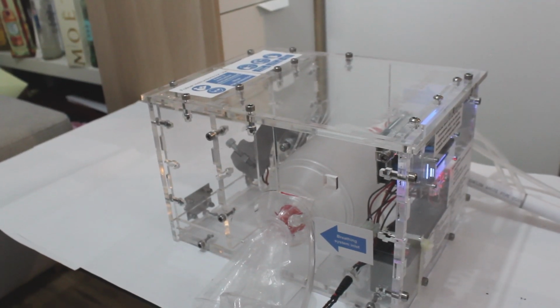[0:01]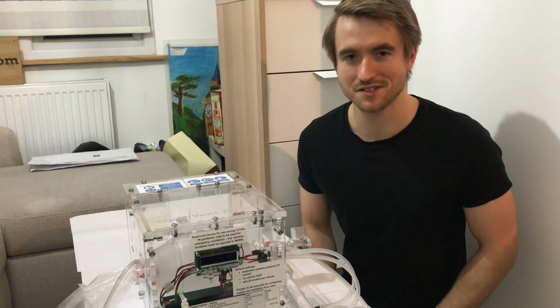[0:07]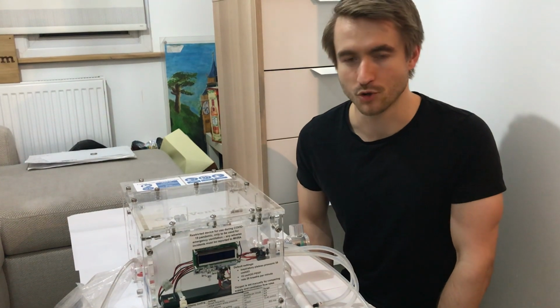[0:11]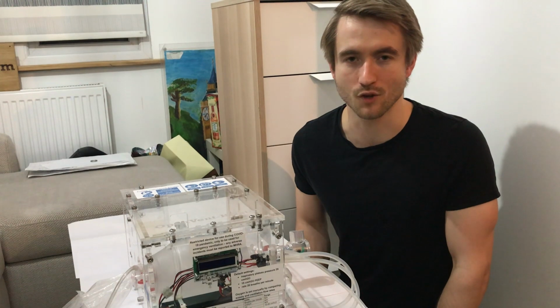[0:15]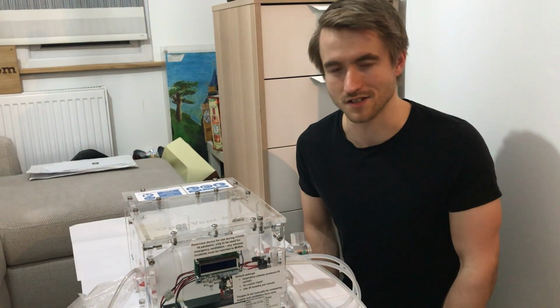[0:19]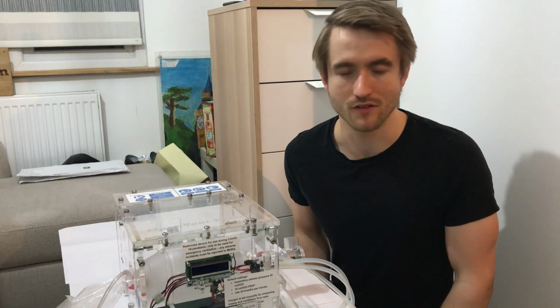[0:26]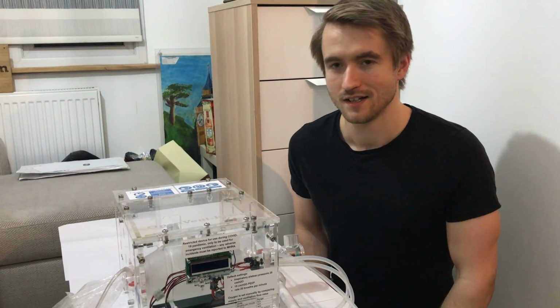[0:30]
Hi everyone, this is our design for an open source ventilator for treating COVID-19. We're a group called OpenVent Bristol, comprising a small number of engineers working voluntarily on a not-for-profit basis to create this design of ventilator, with the aim of open sourcing our design so that the rest of the world, or whoever's interested, can benefit from the learnings that we've made along the way.
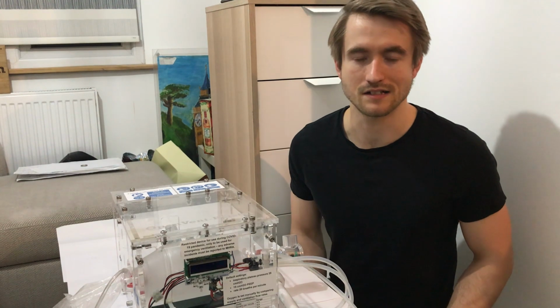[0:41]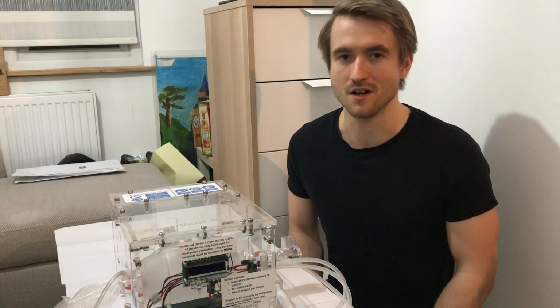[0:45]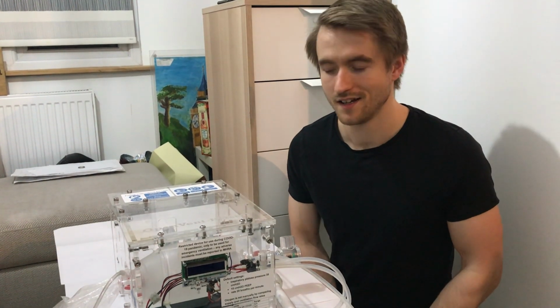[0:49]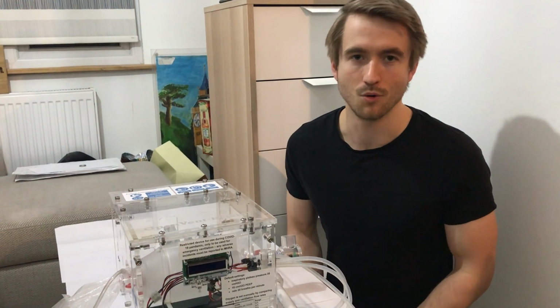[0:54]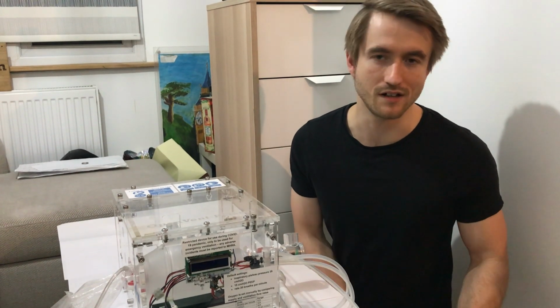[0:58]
The aims of our project are to create a design which is super simple, as simple as possible, so that it can be designed, manufactured, and eventually hopefully certified as well within a very short space of time. So keeping the design as simple as possible is absolutely key, and using parts that are readily available and manufacturing processes that are readily available not only in this country but in pretty much any country in the world.
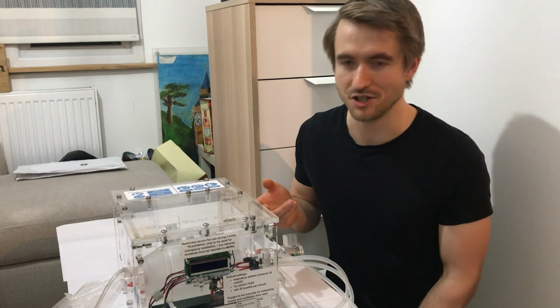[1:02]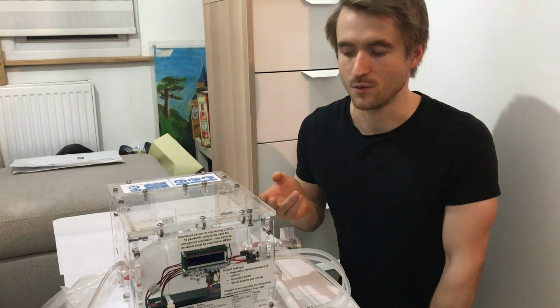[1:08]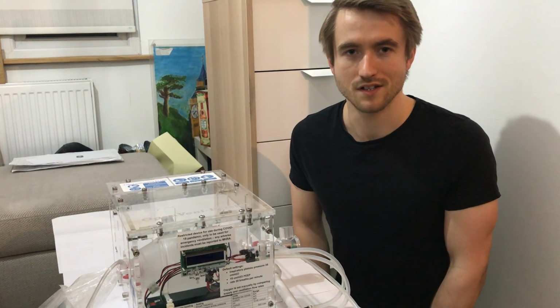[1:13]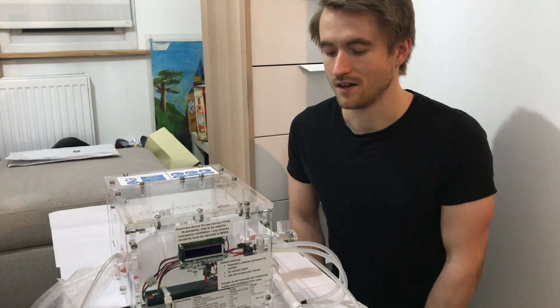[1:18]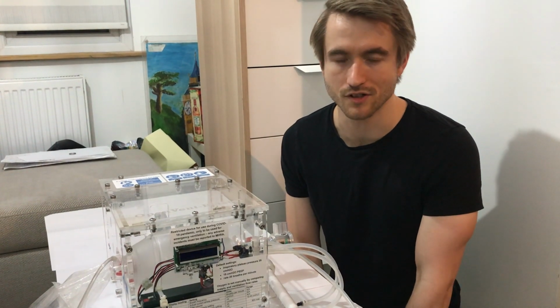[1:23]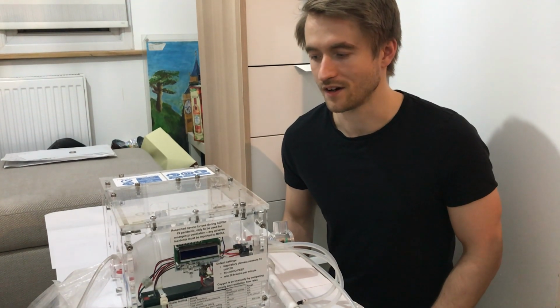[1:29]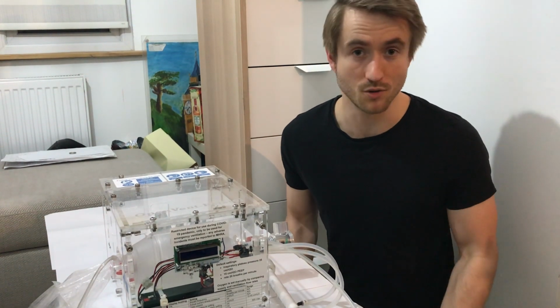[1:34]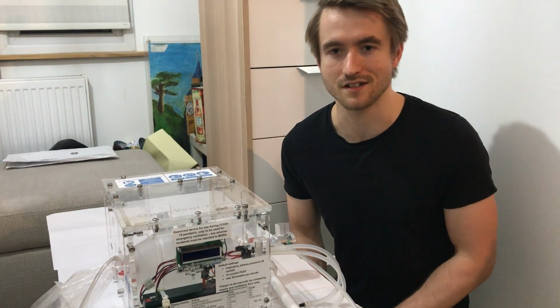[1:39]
Because although we're based in the UK, this isn't necessarily designed with that market in mind. We're considering markets that may not be able to afford the bigger sophisticated ventilators that cost tens of thousands, but it could potentially be used by any country that's interested. For example, there's a group in America called Helpful Engineering who are working to develop the design that I posted last time, and we're collaborating together, which is really awesome. Those guys are great, and they're aiming towards getting FDA approval for use of the device in America.
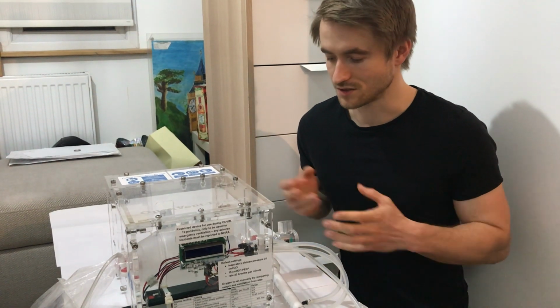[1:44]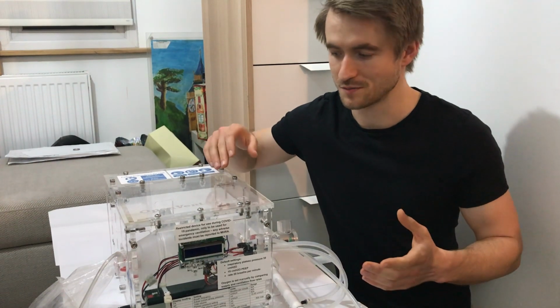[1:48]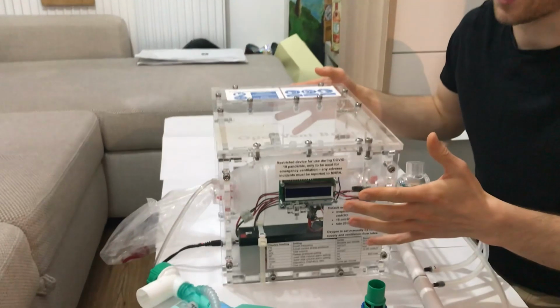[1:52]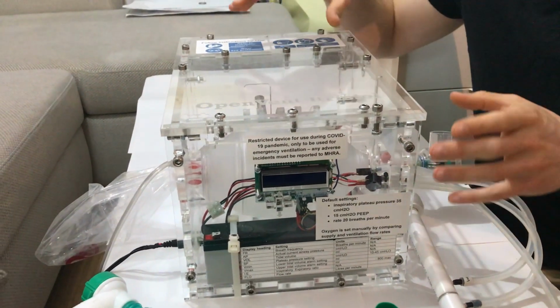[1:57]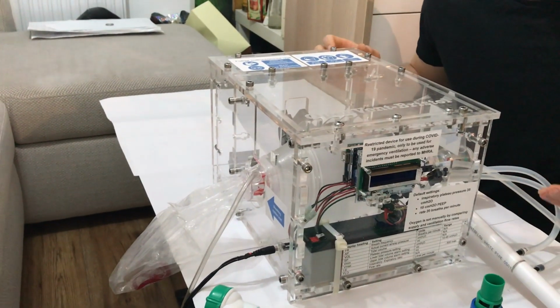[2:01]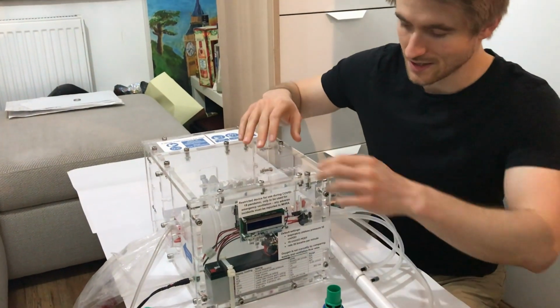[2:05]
What I want to do is talk through the device and how it might be used from the user's perspective. First of all, the device is housed in a box, in an enclosure. And every design decision we've made on this is based around the requirements that the MHRA have posted, so all of the moving parts have to be fully enclosed.
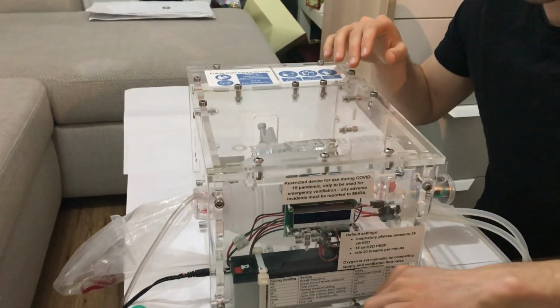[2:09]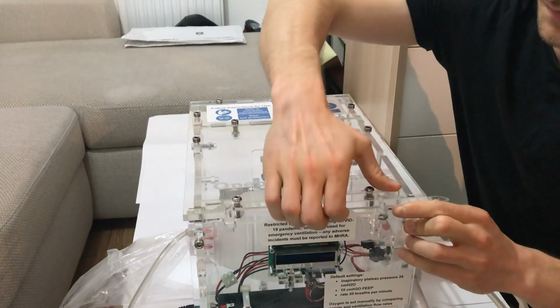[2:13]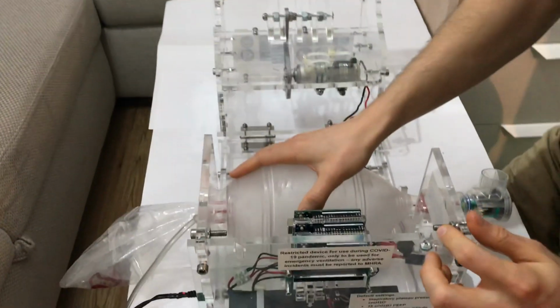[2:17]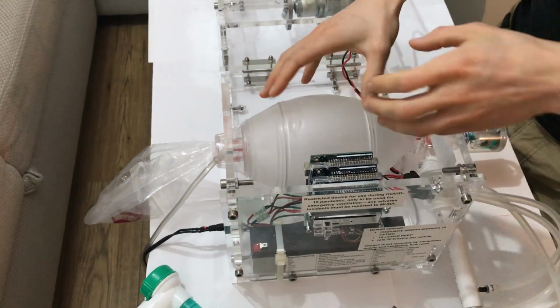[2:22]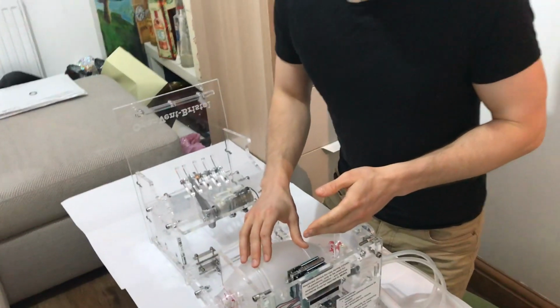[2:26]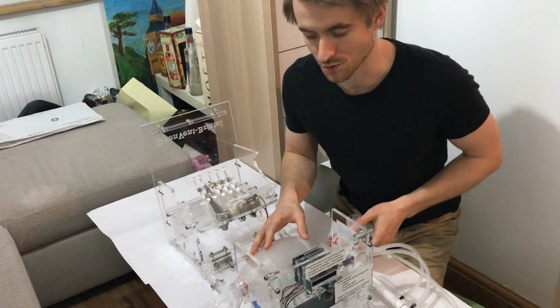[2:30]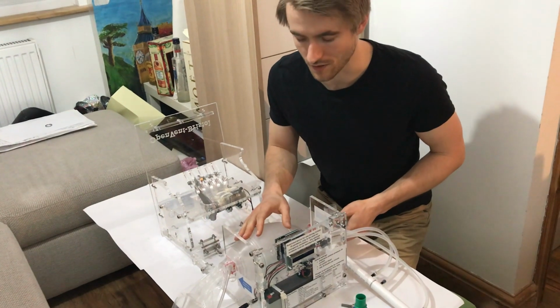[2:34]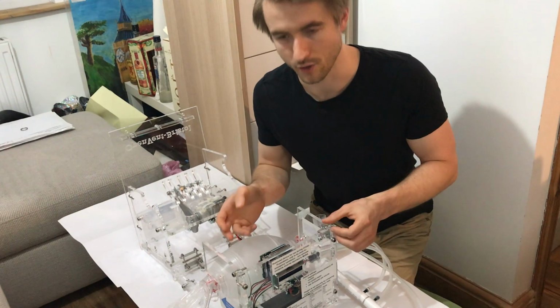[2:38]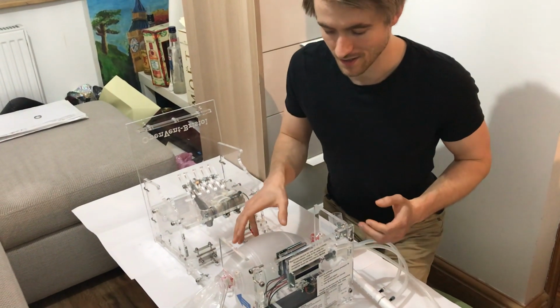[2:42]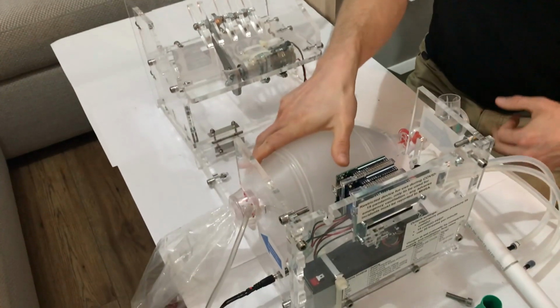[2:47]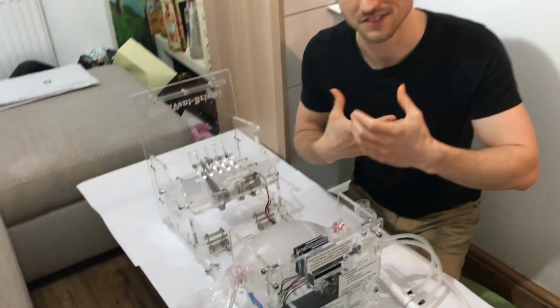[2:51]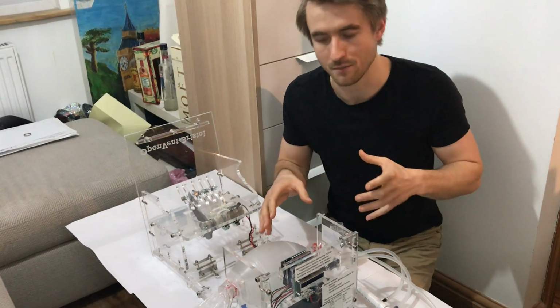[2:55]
We've taken the approach of basing the design on a BVM, also called an ambu bag, and one of those is this device here. This is a BVM. The advantages of basing the device on the BVM are that it's already a medically certified product, which is widely used across the world in a lot of healthcare systems already. It's really cheap, really readily available, and already medically certified. The bit that it can't do is automatically ventilate. It's designed as a hand pump ventilator, so you squeeze it, and traditionally you would put a mask on the end, put that mask on somebody as a paramedic or somebody in the hospital and squeeze it as a temporary measure.
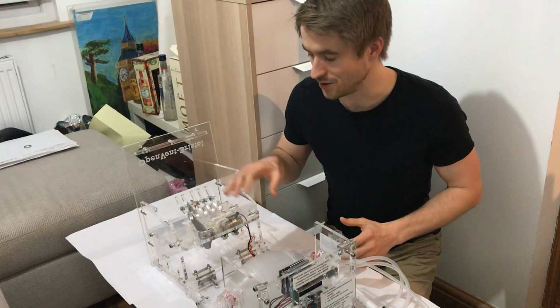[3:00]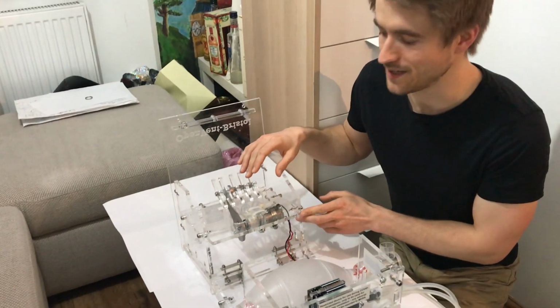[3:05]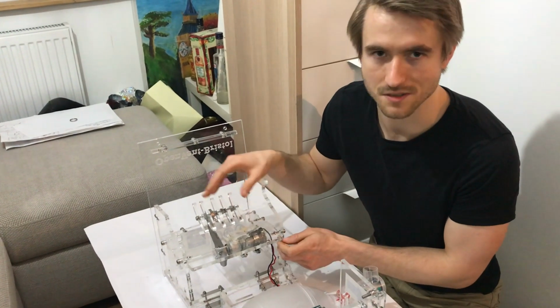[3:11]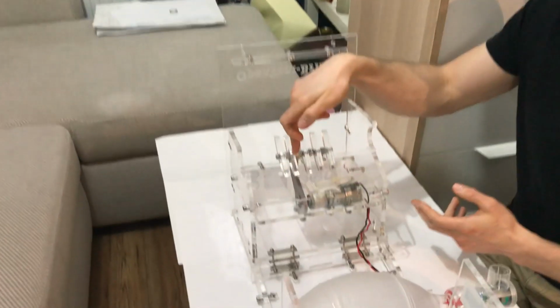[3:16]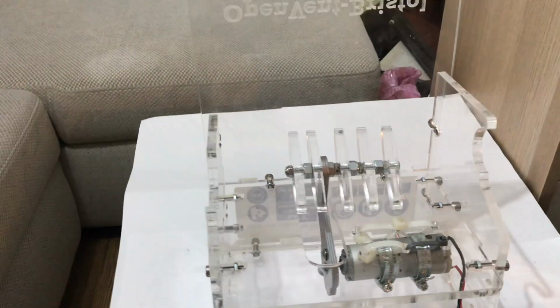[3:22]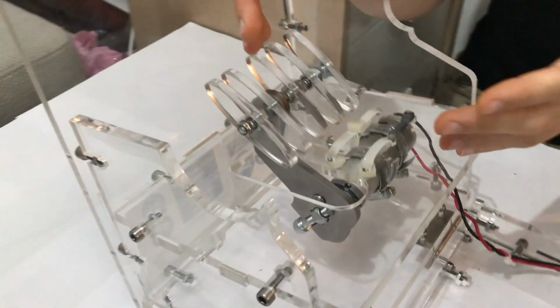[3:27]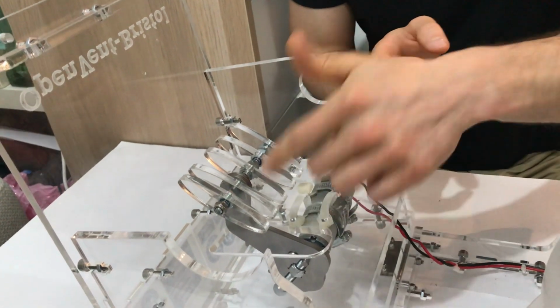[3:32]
What we're doing here is animating that bag and actuating it using an electromechanical mechanism, but still with that focus of trying to keep it as simple as possible. There's nothing fancy on here, there's no parts which don't need to be there, it's just cut down to the absolute bare bones. So we've got a motor and then an arm attached to the motor, and that arm just moves backwards and forwards, controlled by some fairly simple software. My point is there's no gears, rack and pinions, there's nothing between the motor and the arm. It's just keeping it as simple as possible.
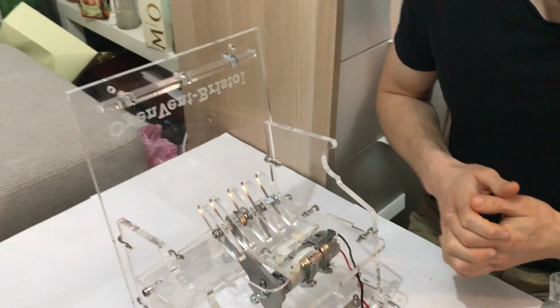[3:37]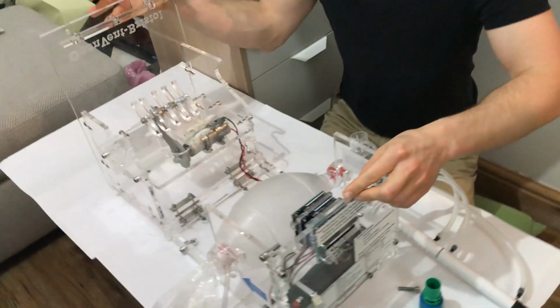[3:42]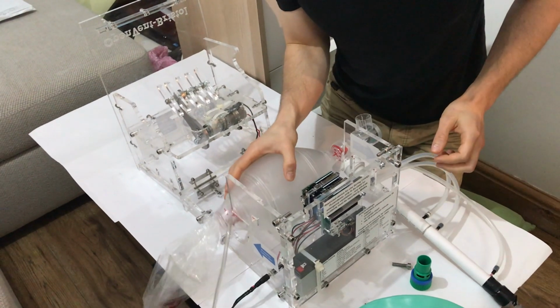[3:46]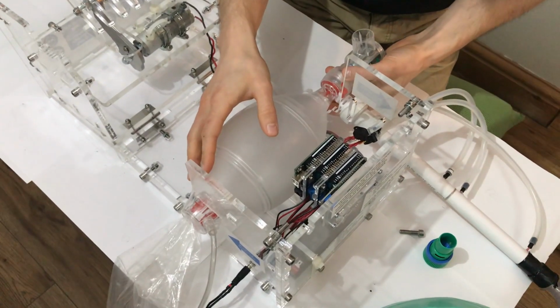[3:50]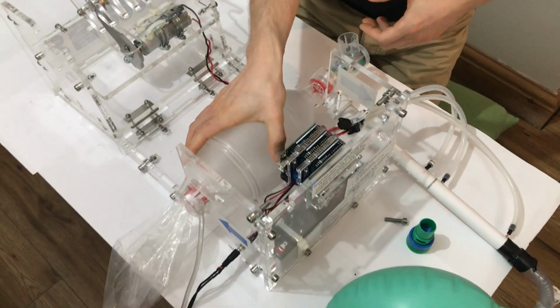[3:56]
As you notice, the whole thing opens up, the lid comes back, for a couple of reasons. One, so that you can swap out the ambu bag and put a new one in, but also if you really get desperate and really need to, you can just open it up and grab it by hand and squeeze it yourself as a manual backup.
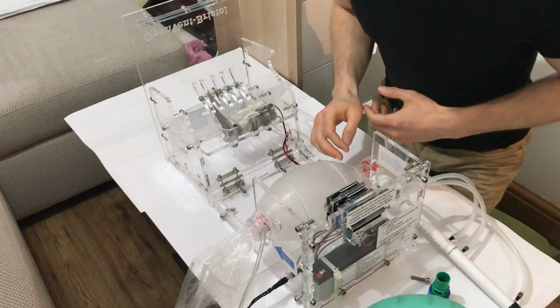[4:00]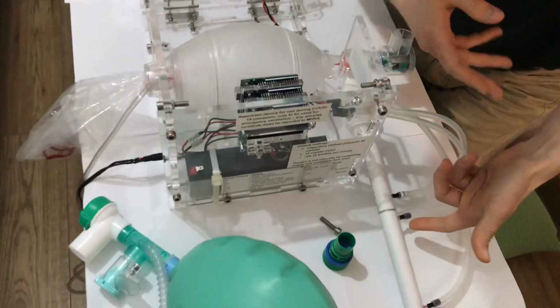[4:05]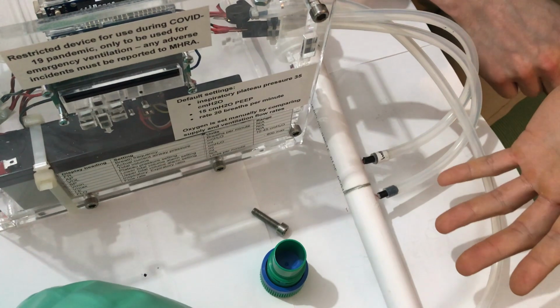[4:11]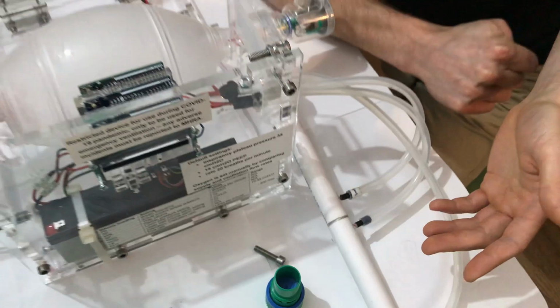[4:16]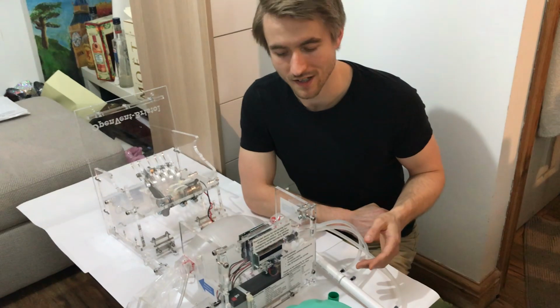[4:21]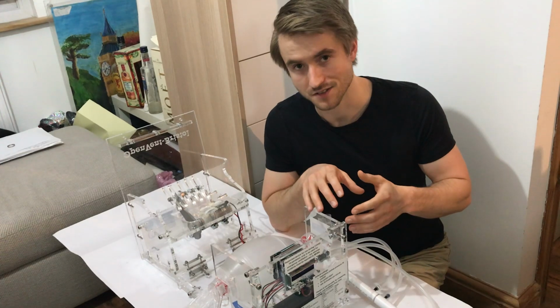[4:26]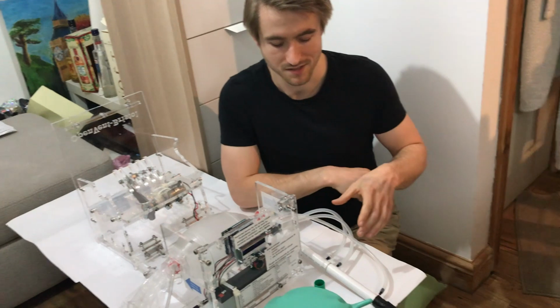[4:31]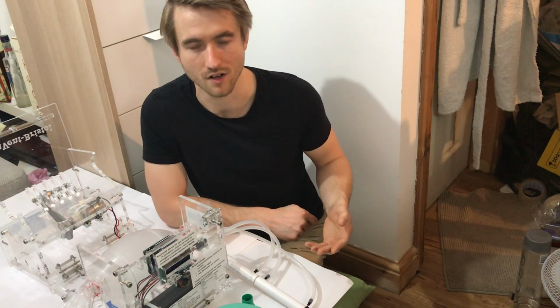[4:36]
Other things we have in the design, we've got a flow rate sensor, which you can tell obviously is not an off-the-shelf flow rate sensor. It's not something that we bought in, and the reason for that is because flow rate sensors for ventilators are quite hard to come by at the moment. They're pretty much out of stock everywhere, so bearing in mind simplicity and designing this to be manufactured in high quantities, I think it was a wise decision not to base our flow rate sensor on an existing off-the-shelf design which might not be available in high quantities at the moment.
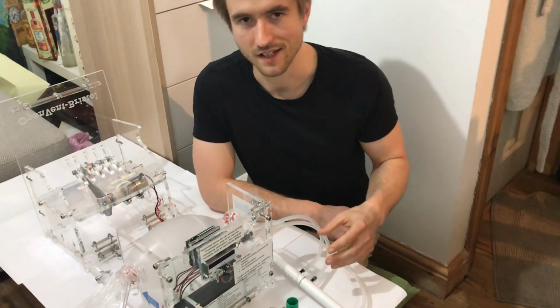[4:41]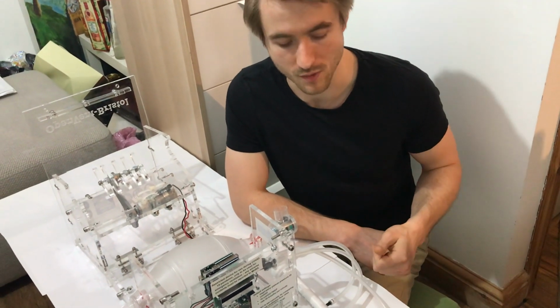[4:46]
So this is something that we've made, and we verified it against an existing off-the-shelf system, and it seems to perform pretty well. I'll go over that in a bit more detail in another post.
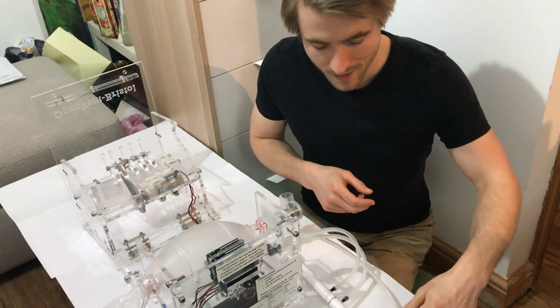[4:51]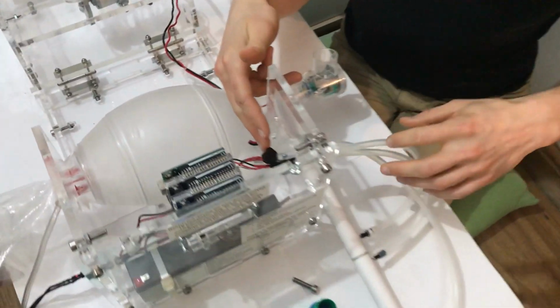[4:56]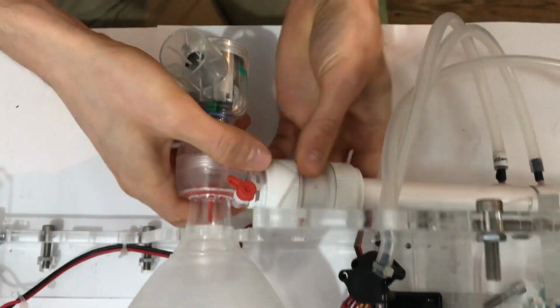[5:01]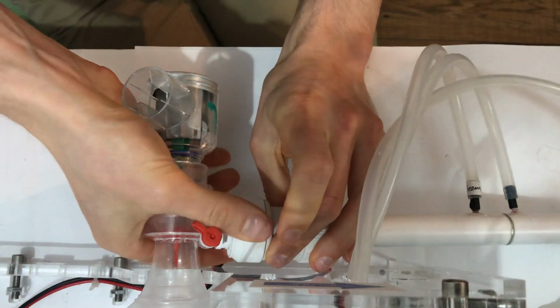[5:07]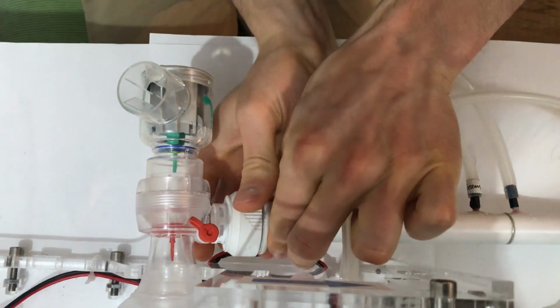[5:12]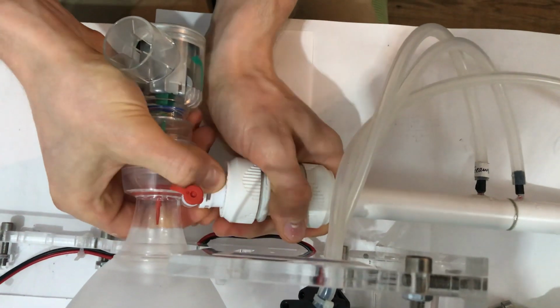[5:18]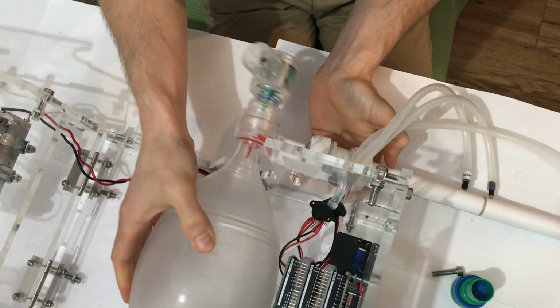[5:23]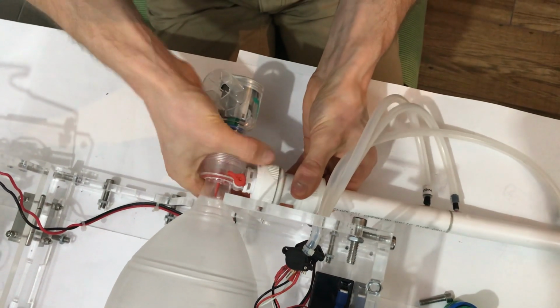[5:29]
So as well as the flow rate sensing, we've got a pressure sensor, both of which go through some tubes into the main chassis, and that fits onto the ambu bag at the moment, as this is still a prototype, it fits on just using a plumbing connector. So pretty conveniently, plumbing connectors are compatible with hospital connectors. How amazing is that? So it just pops on and off like that, and then you can take the bag out and change it for a new one, or do whatever you want to do. And this just pushes back on and screws in place.
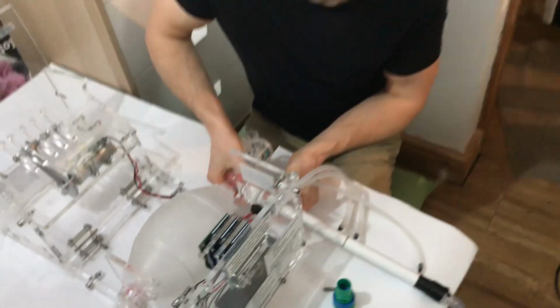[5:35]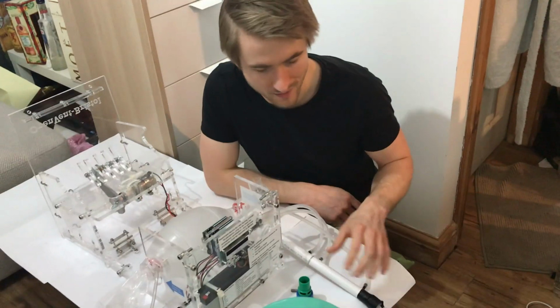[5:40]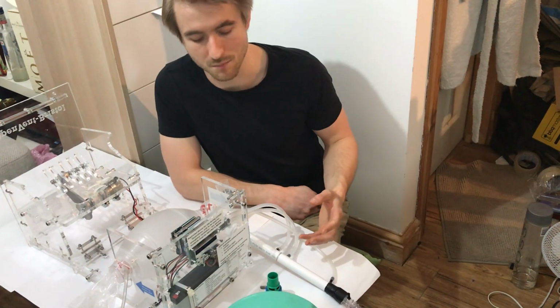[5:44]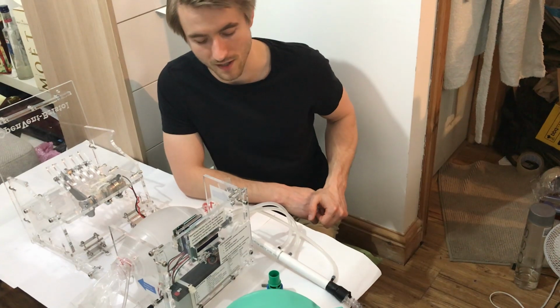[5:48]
So worth noting that this isn't the final design, so some components such as the flow rate sensor will have to change, because the material it's made from isn't a medically safe material. In fact, it's PVC, which is a material that you shouldn't use in a medical device. But this is still in the prototype stage, so we'll be moving away from that later on.
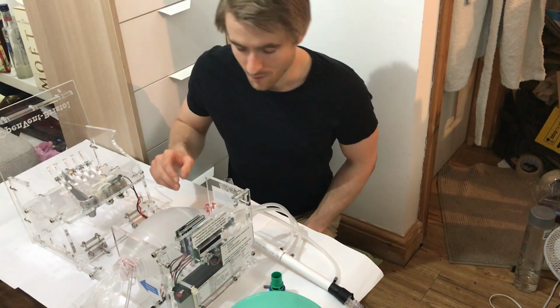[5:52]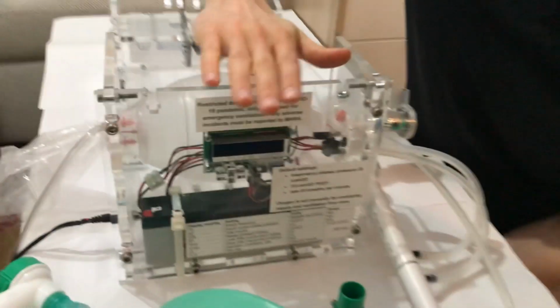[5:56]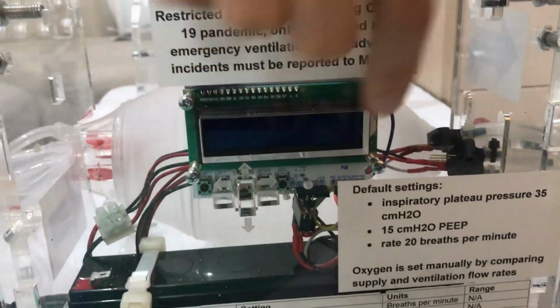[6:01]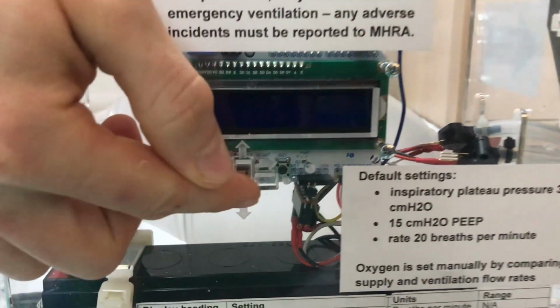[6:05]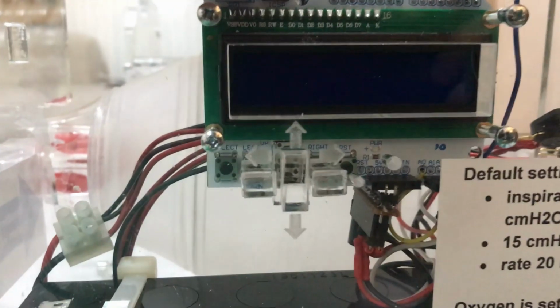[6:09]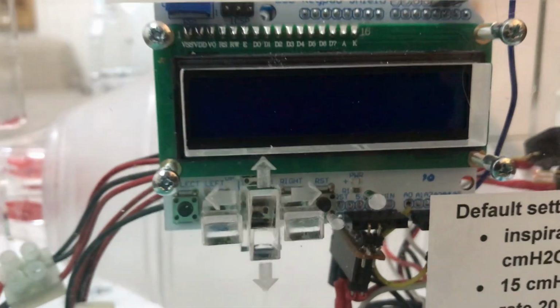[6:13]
At the front of the device, we have the user interface. So that takes the form of an LCD display, which shows you all of the things you need to show on the screen. And with these buttons, it gives you control over the settings that you need control over, running in pressure control ventilation, which is how it's running at the moment.
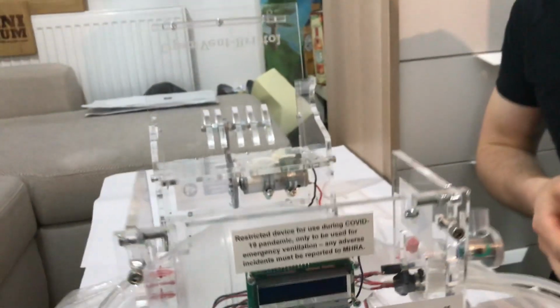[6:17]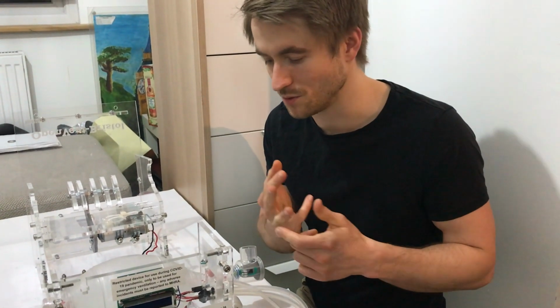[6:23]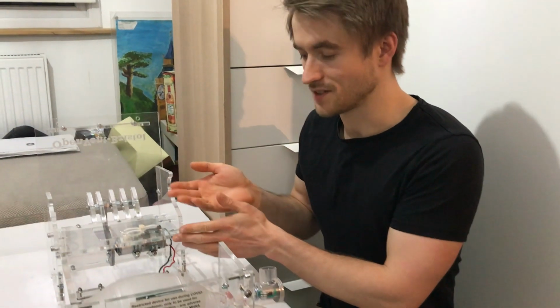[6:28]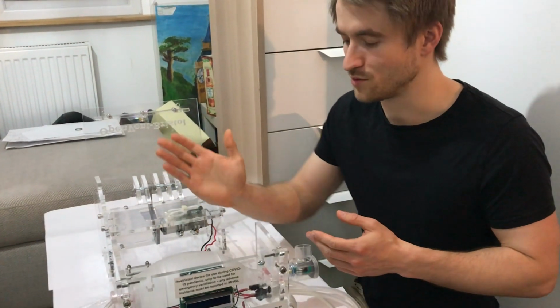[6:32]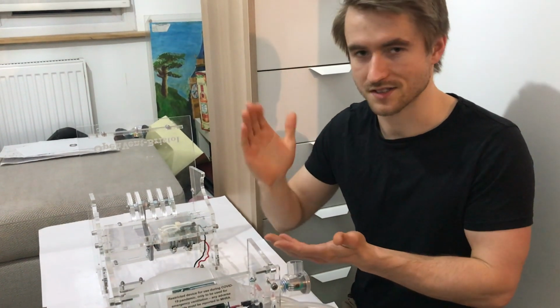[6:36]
So as well as the flow rate sensor and the pressure sensor, our third and final sensor, as I said, keeping it as simple as possible, is sensing motor current. And that's just for if something really goes wrong, and for example, you forget to put the bag in and the arm just comes all the way down, presses against the floor, then we can sense that that's happened with motor current.
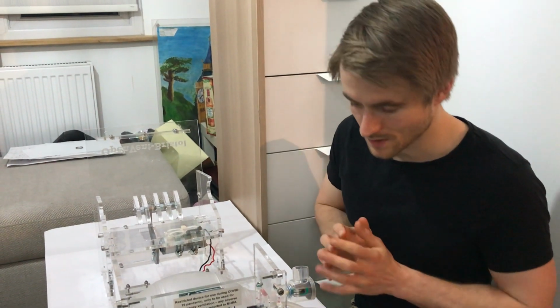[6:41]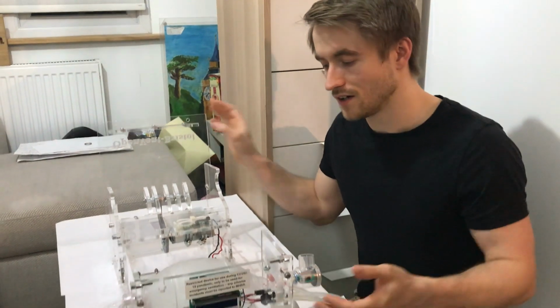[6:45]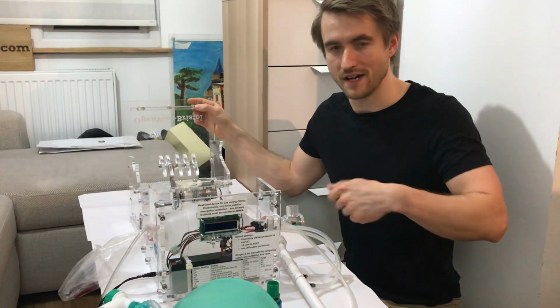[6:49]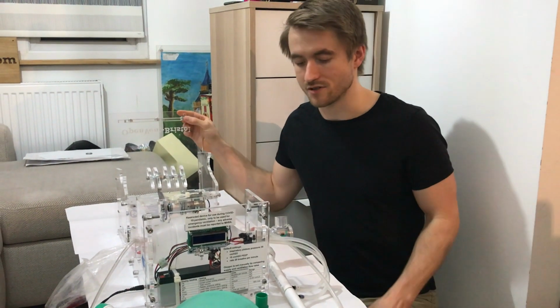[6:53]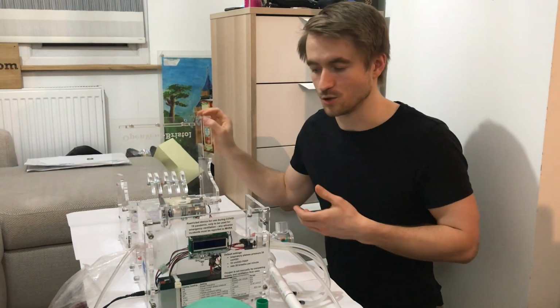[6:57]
What else? It's got a battery as well. So again, part of the requirements is that it needs to survive when the mains power is cut, and also show an alarm. So we've got a battery there which should last around 20 to 30 minutes, and the machine can still run seamlessly when the power has been cut.
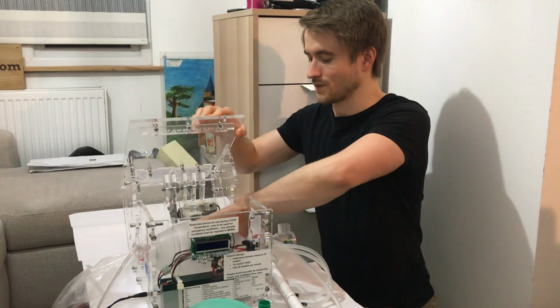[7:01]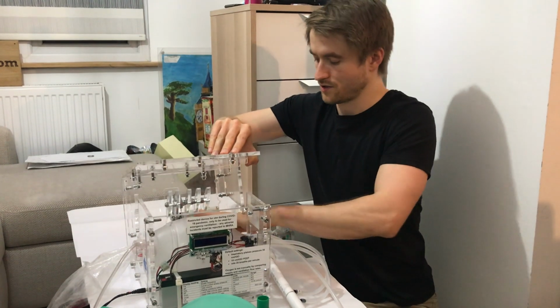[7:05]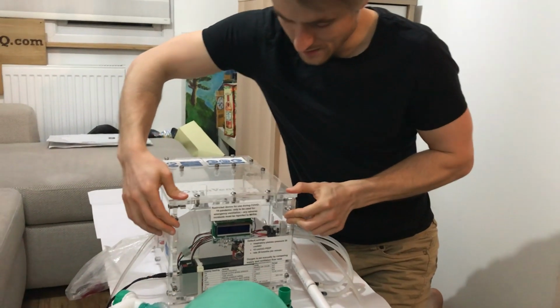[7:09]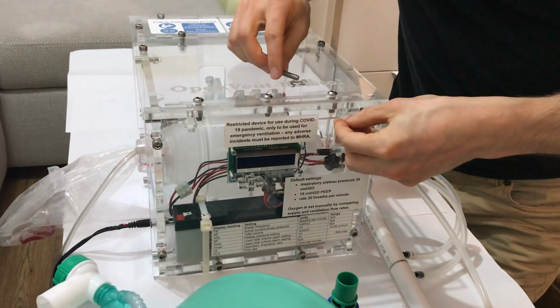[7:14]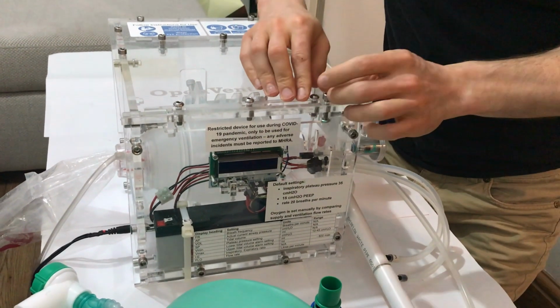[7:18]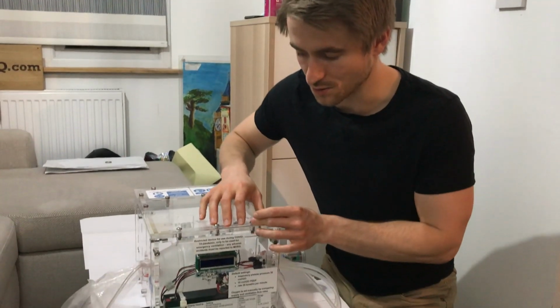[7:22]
I'll show you it's switched on. So it just clamps into place like that, and then for now we've got a nut and bolt that holds it all in, but that will be replaced later on with a clamp that will be easier to assemble without needing any tools.
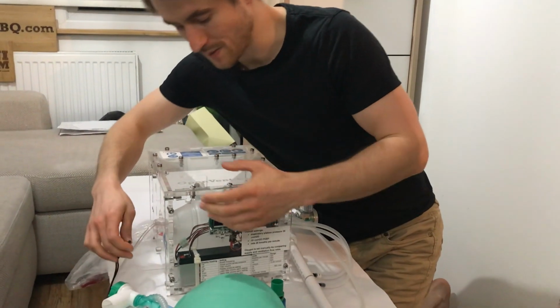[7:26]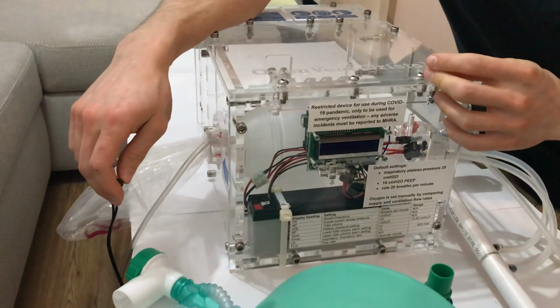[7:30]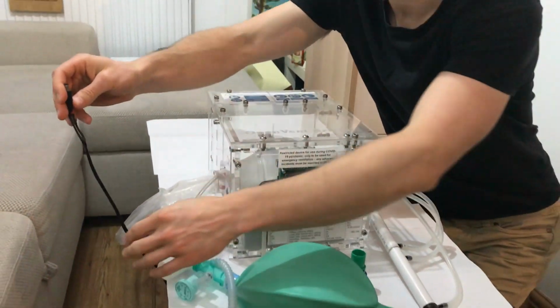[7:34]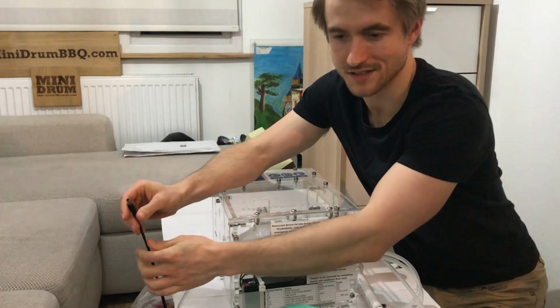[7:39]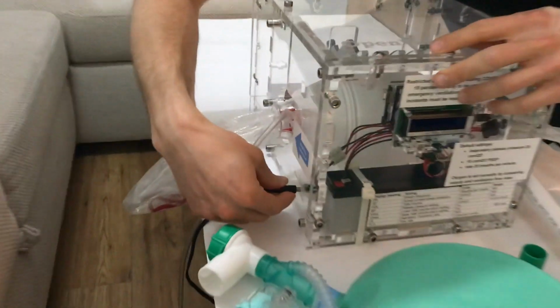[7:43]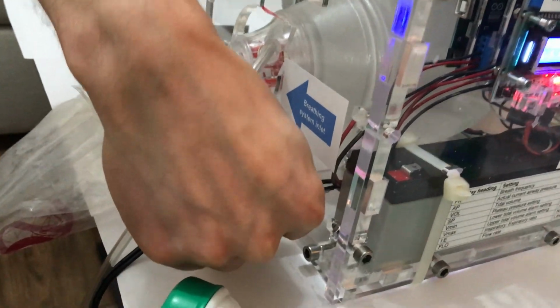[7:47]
So the whole thing is powered off 12 volts. So the whole thing is low voltage, which means we don't have to worry too much about high voltage standards. We just have a wall power supply that converts from mains into 12 volts. 12 volts plugs into the side like that, and it wakes up the display.
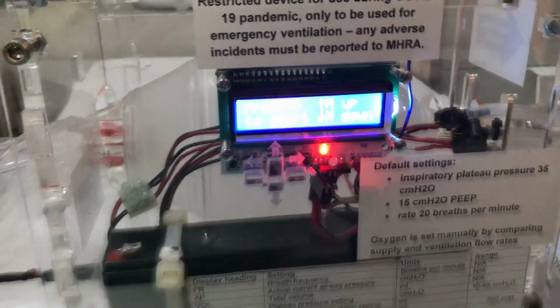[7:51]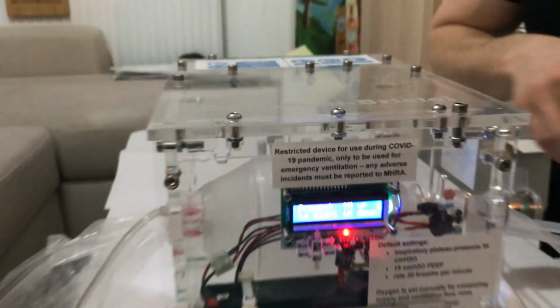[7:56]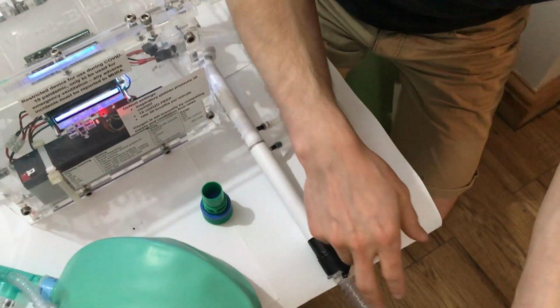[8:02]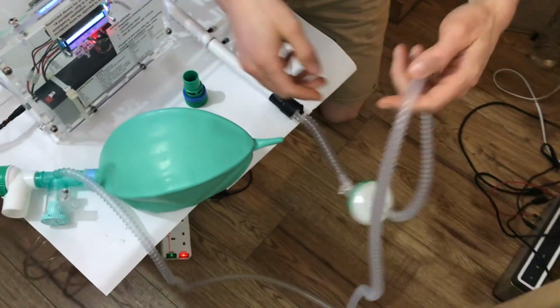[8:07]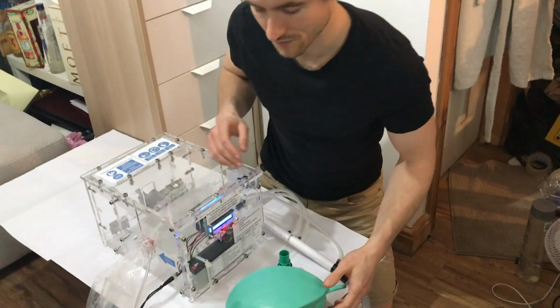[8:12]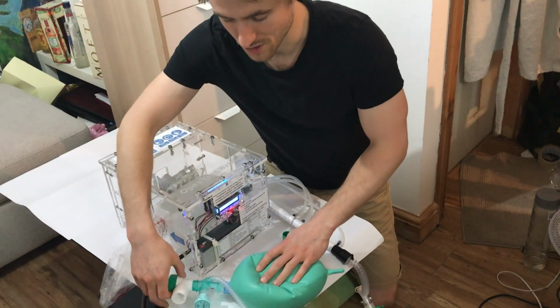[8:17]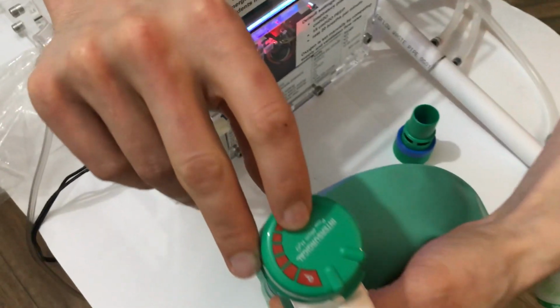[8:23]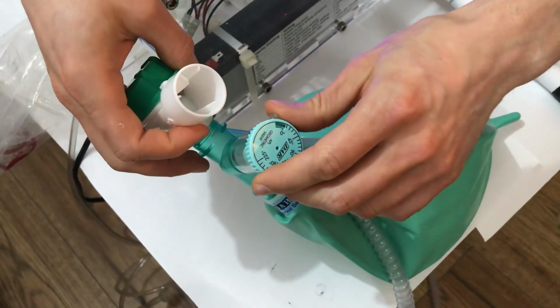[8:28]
So before switching it on, I'll show you what we're connected to all the way down here. So going from the ambu bag, the output of that goes through our flow sensor, the pressure sensor goes through an antiviral filter all the way through to this, which is not a test lung, but it's the best thing that we've got at the moment for testing the system. I think it's usually used in CPAP devices. There's an overpressure filter which is set to a maximum of 60 centimeters of water, and there's a pressure relief valve, an APL valve.
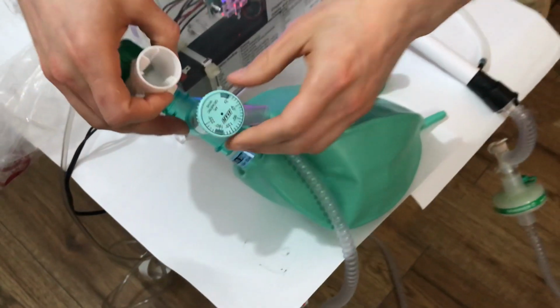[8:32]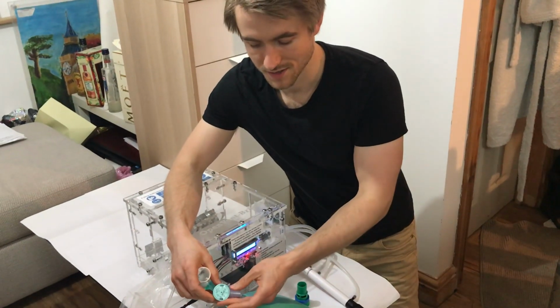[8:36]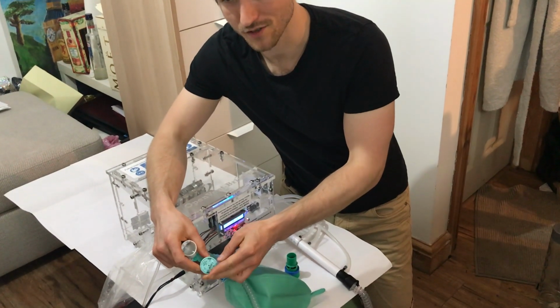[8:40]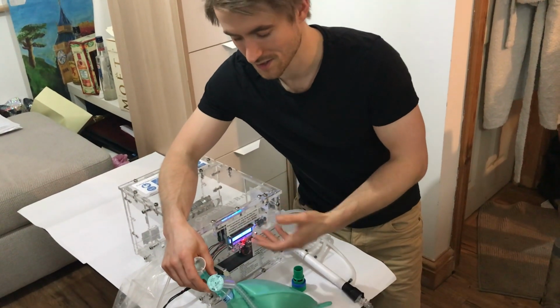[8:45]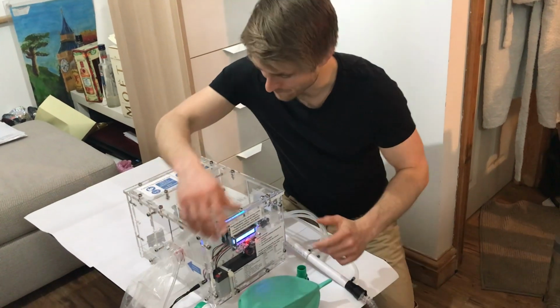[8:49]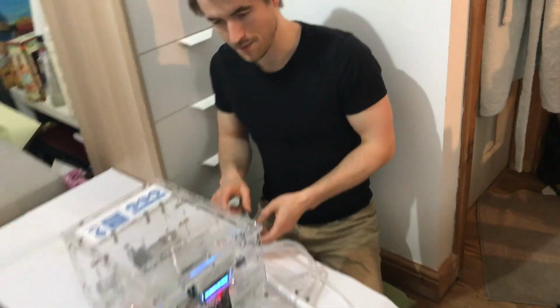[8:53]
So what I've been able to do while doing the programming for this thing is I can change the setting on this, and that gives a bit of an indication of the change of lung resistance. So it allows me to play about with some of the settings in the code. And then all the way over here we have the PEEP valve.
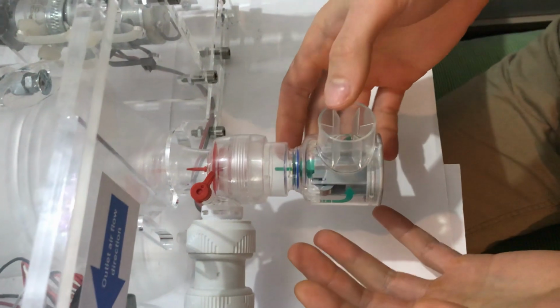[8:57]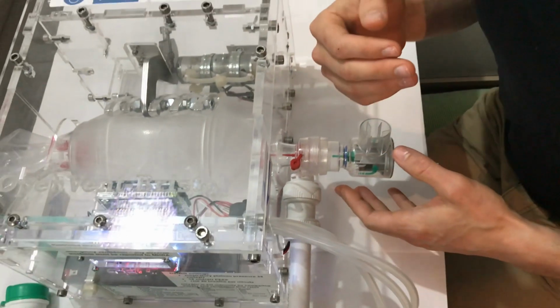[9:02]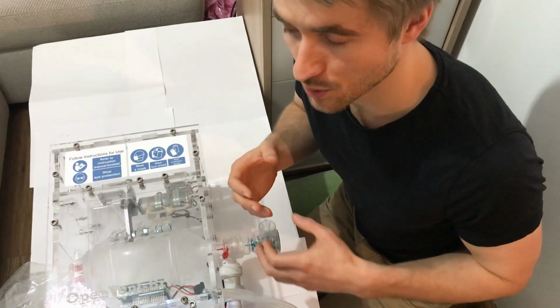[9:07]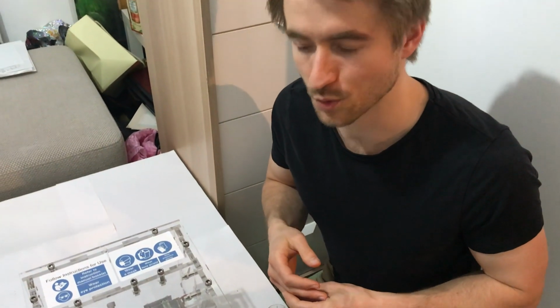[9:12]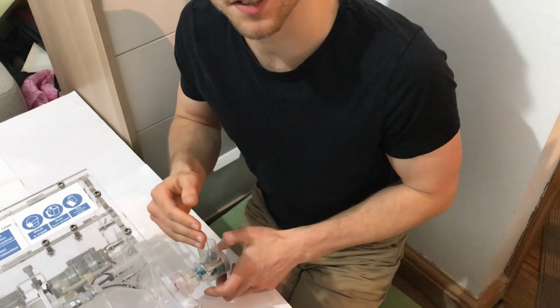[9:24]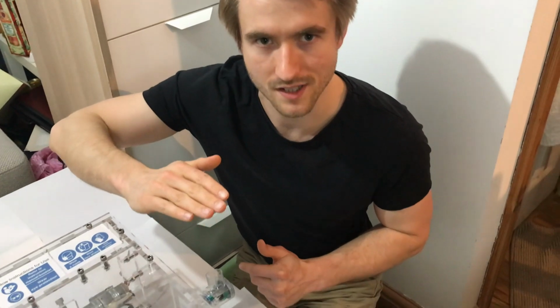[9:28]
So just a super quick explanation if you don't know what PEEP is. PEEP is the lower pressure limit, which means particularly for treating COVID, it's quite important, because you need the lungs to be always expanded and always pressurized at all times. So that means in the inhale breath, obviously pressure goes through the system into the lung, and then when it goes into the exhale breath, this makes sure there's always a high pressure even when you're exhaling. It's just that the pressure goes up in the inhale, pressure drops down a bit in the exhale, but
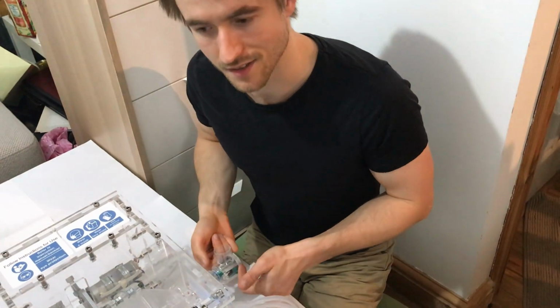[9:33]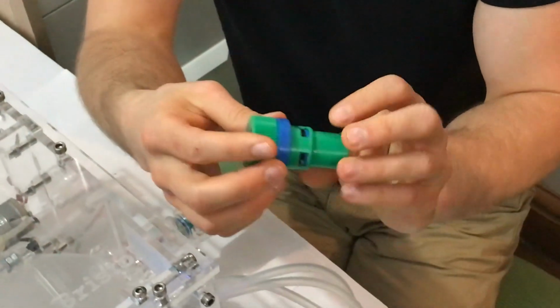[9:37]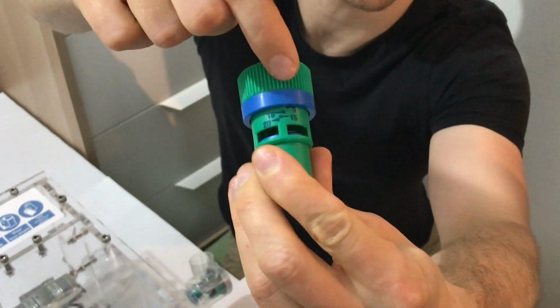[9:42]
never reaches zero. And this PEEP valve is set to 10 centimeters of water, but you can get adjustable PEEP valves like this one, where you turn that dial and then you can set on there what the PEEP should be like that.
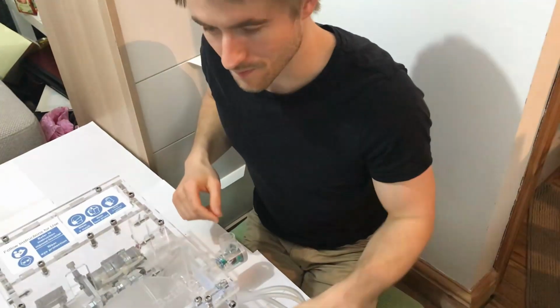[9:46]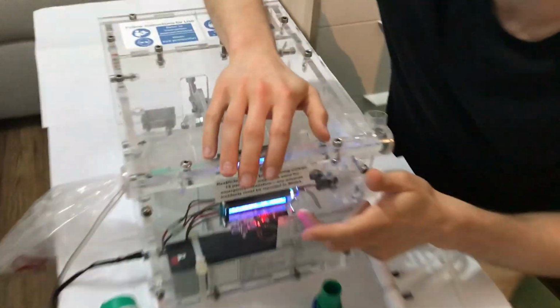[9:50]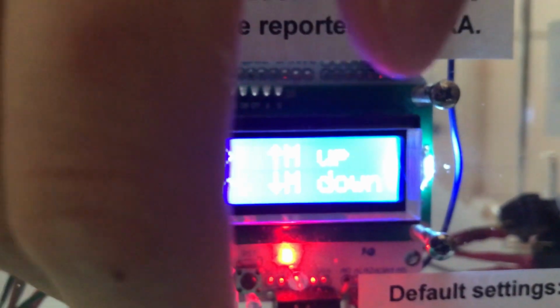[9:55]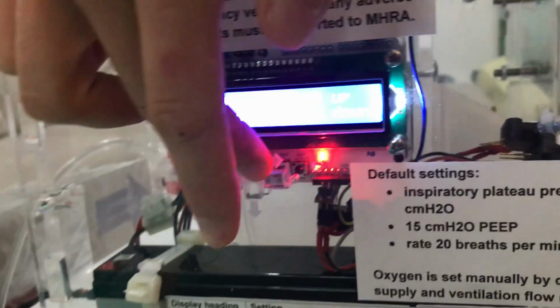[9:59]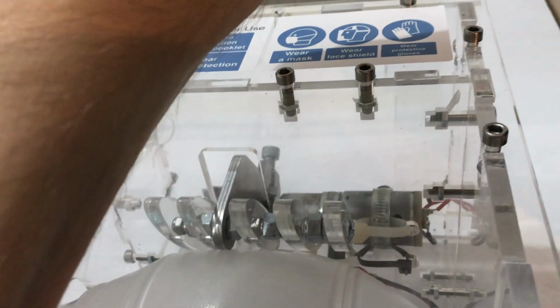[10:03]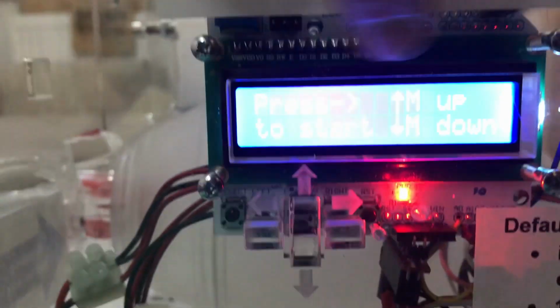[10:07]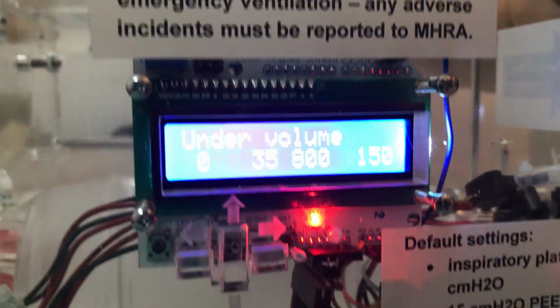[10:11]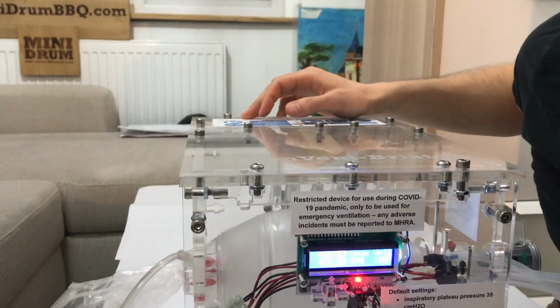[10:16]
So over to the display again, and if we need to, we can press these buttons like that to move the motor arm up and down, if there's a problem with the starting position. And then down here it says on the screen, press the right hand arrow key to begin. So you press that, and then it starts going, and the test arm falls off the bench, but that's okay.
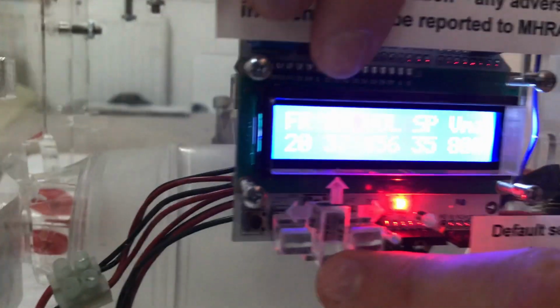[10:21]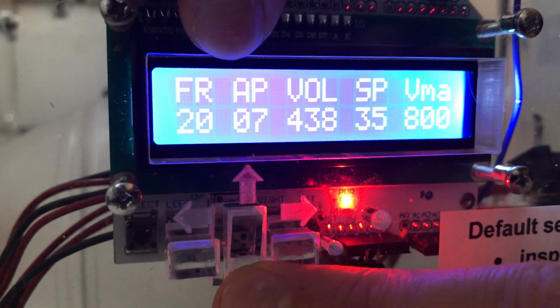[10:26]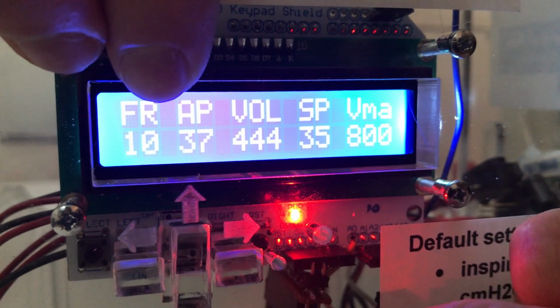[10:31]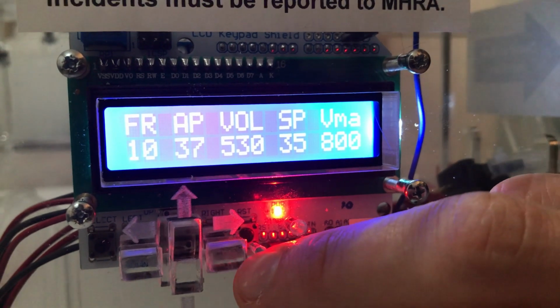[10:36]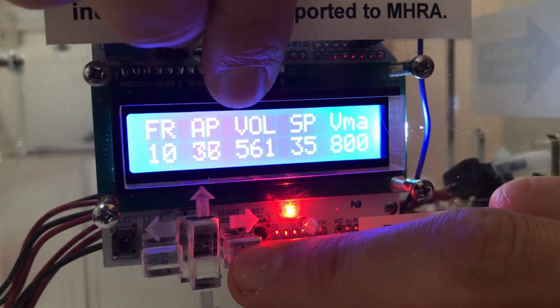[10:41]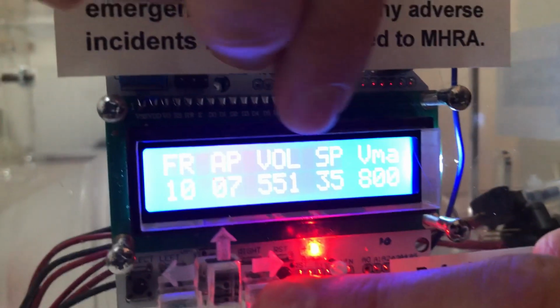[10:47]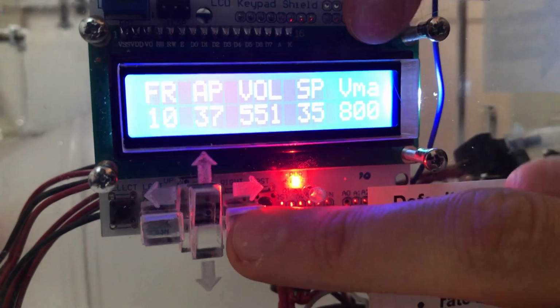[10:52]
So what we see on the screen is FR, which is frequency, breath frequency per minute. You can make that go up and down and choose what you want for that. So it's now at 10, so you can hear that the frequency has obviously slowed down now. AP is the actual airway pressure. It holds at a maximum, so you can see the highest pressure that it's got to. Volume is the volume that it's managed to deliver. SP is something you can set, that's the set pressure.
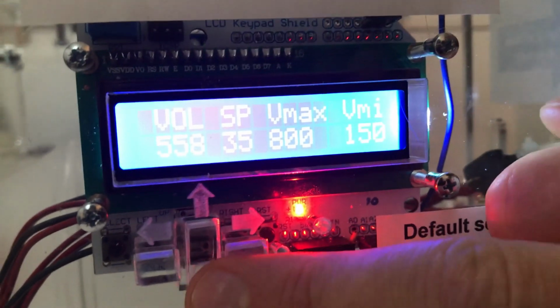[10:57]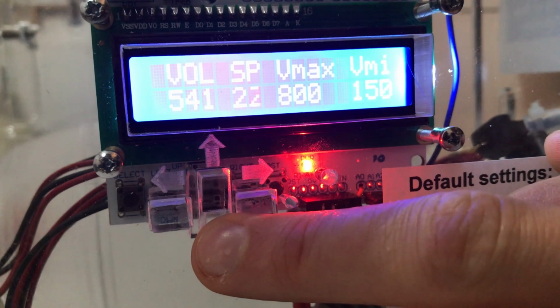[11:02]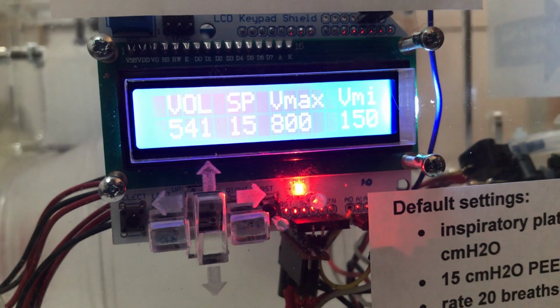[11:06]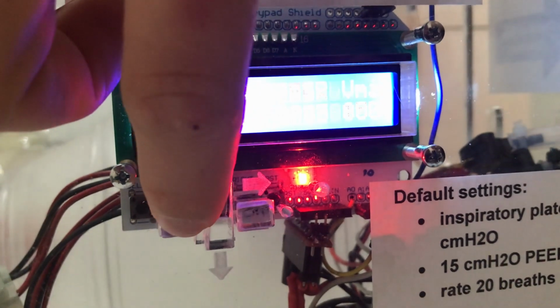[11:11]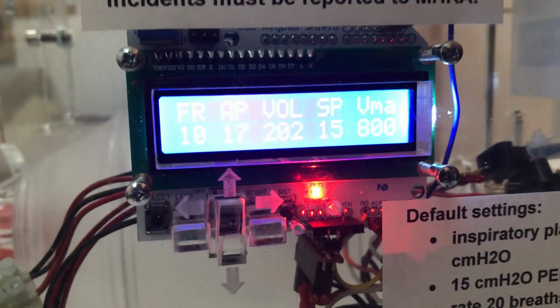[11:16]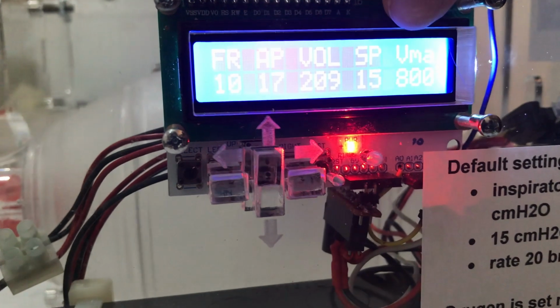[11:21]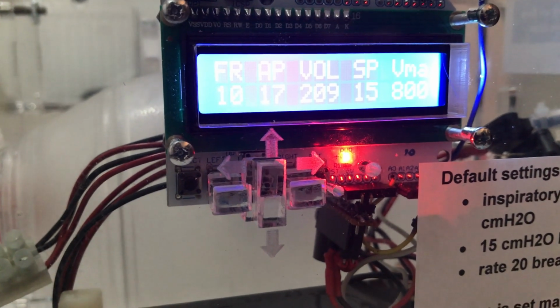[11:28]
So we're at 35 centimeters of water, which is the default setting. So I can turn that down all the way to the minimum that it's got, which is 15 centimeters of water. And you see, as soon as I turn that down, the volume reduces, and the actual airway pressure, which is the peak, that always remembers the highest pressure, slightly more than the set pressure, which is okay, because the set pressure sets the plateau pressure. So as soon as the motor presses down, the pressure peaks up and then jumps down a little bit to a plateau level.
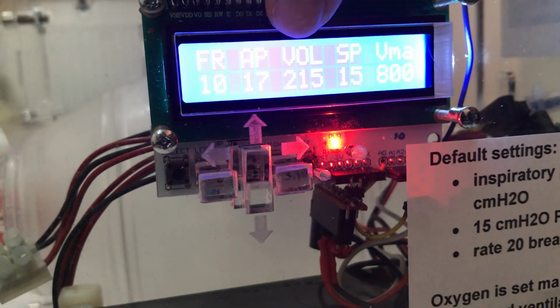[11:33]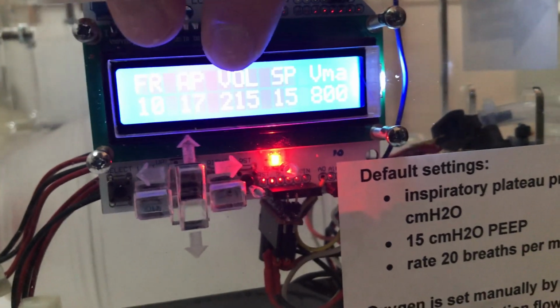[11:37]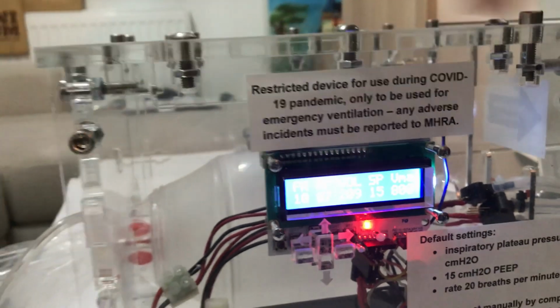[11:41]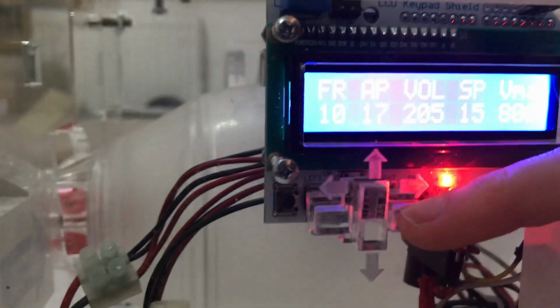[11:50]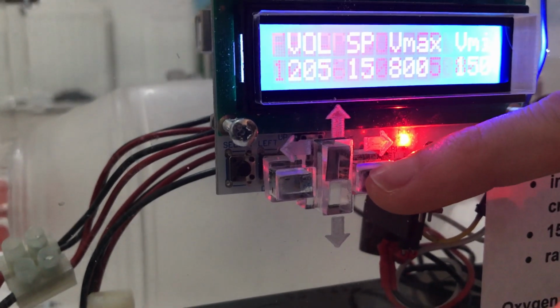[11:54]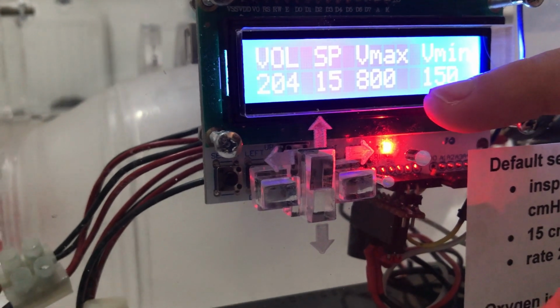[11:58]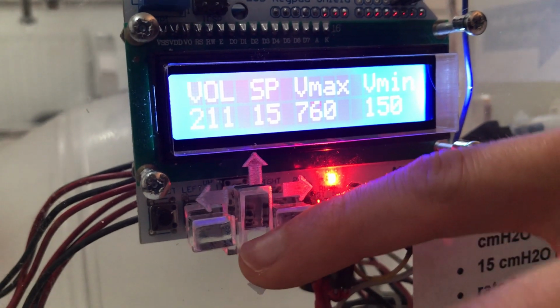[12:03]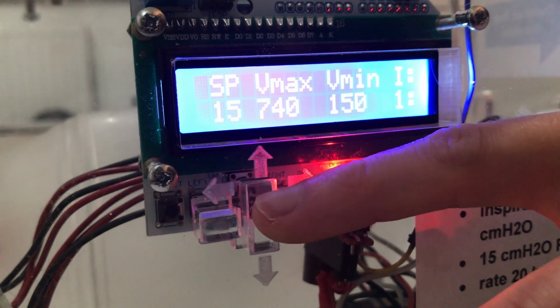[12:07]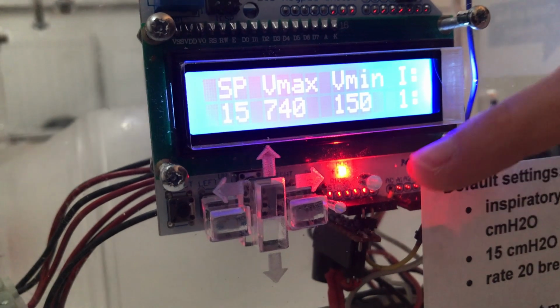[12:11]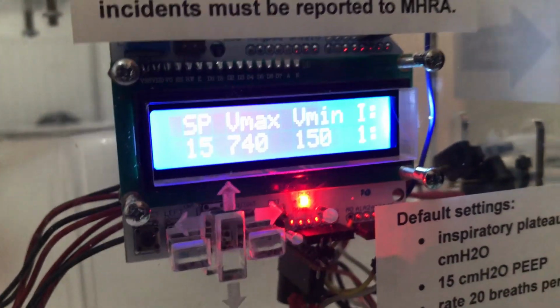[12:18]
So the fact that this number is a little bit higher than that one is actually fine, because that's just remembering a peak value rather than telling you the actual pressure all the time. Otherwise the numbers would flicker on the screen so quickly you wouldn't see what's going on. Also on the screen we have tidal volume alarms, which is needed for pressure control ventilation mode, which is the mode that it's running at the moment. So over here we have Vmax, which is the maximum volume. You can change that, make it whatever you want it to be. And Vmin, which is the minimum tidal volume limit. So if the actual volume that's produced goes beyond these limits, then it will sound an alarm.
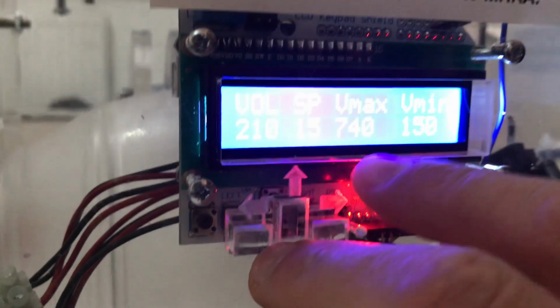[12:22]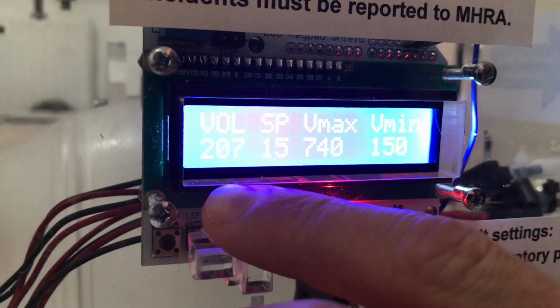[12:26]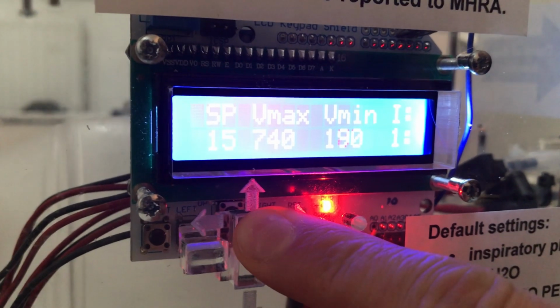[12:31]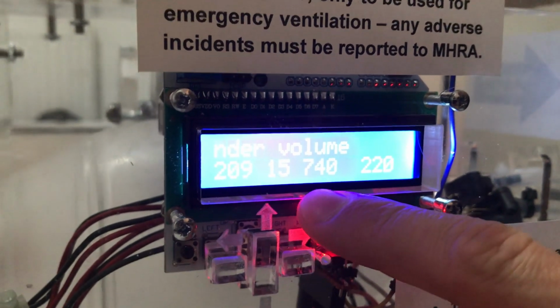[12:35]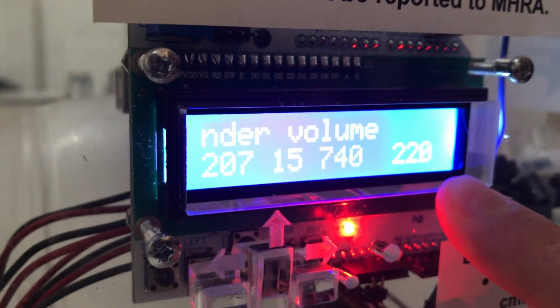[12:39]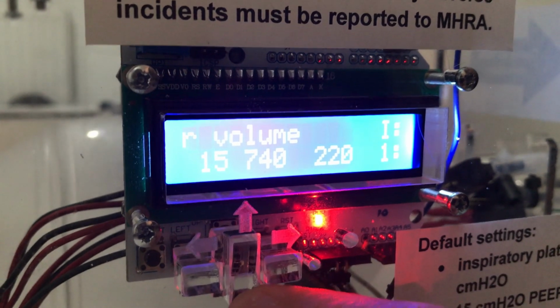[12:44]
And to demonstrate that, I can just increase the minimum, so you can see that happening. So we've got a volume of about 200 at the moment. So if I increase the minimum to 220, then you can see the alarm's going off, because the actual volume is less than the alarm state on the minimum volume. So I'll turn that down now, because it's a bit annoying.
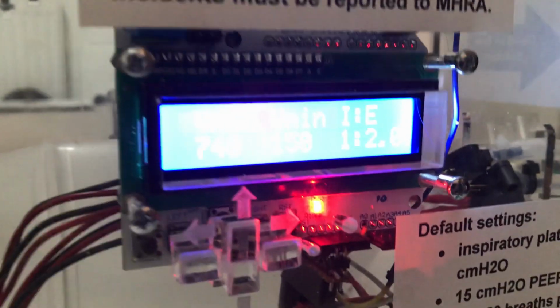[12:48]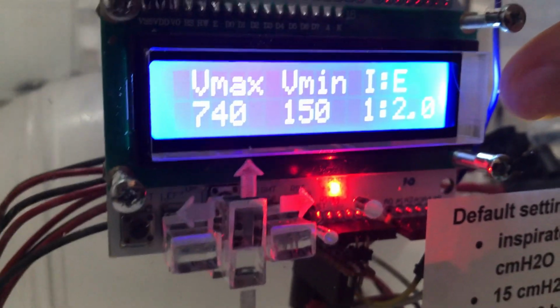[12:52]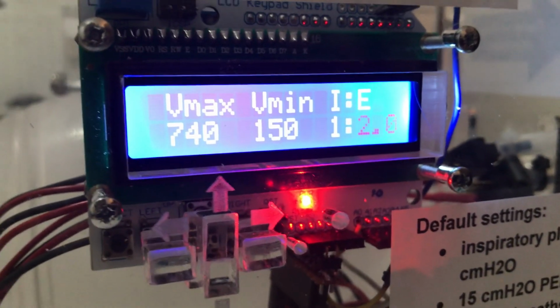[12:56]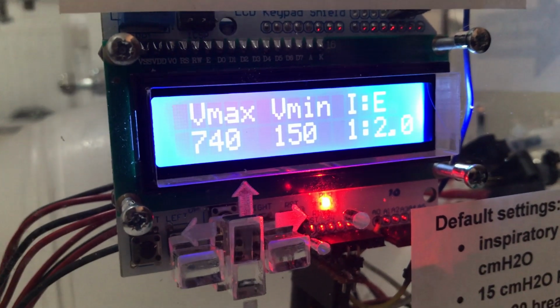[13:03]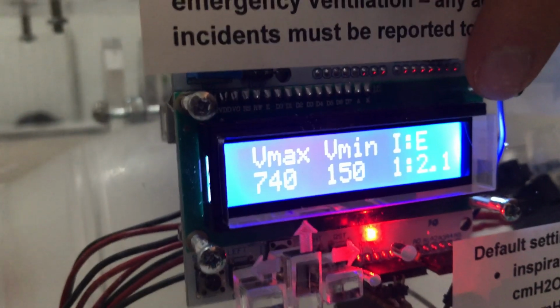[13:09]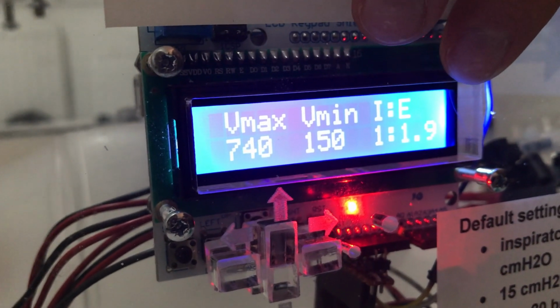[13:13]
And then the last thing it reads there is a measured value of the I to E ratio. It is possible to change the code to make this a setting, so that you can change it, say if you want a 1-to-1 ratio or 1-to-3 or something. But at the moment, just working off what the requirements have asked us to do, this is set at a constant number of 1-to-2, and it's reading that to the screen, so you know what it's actually delivering as well.
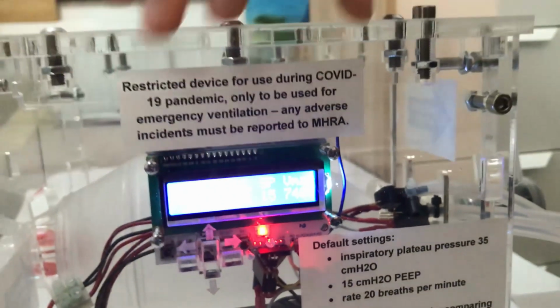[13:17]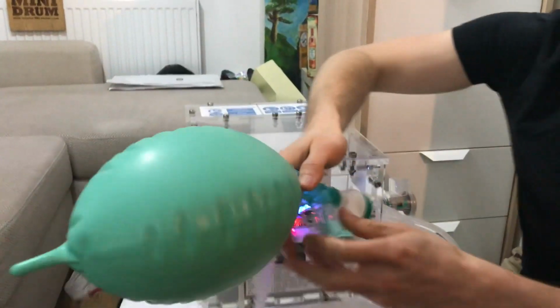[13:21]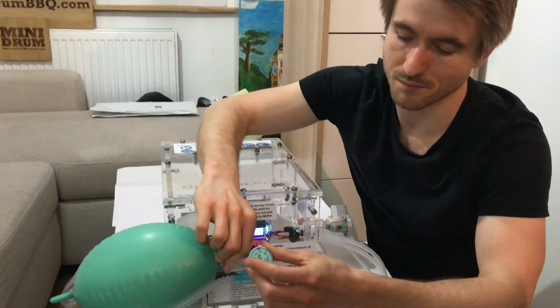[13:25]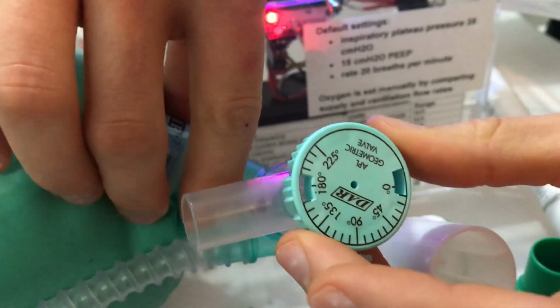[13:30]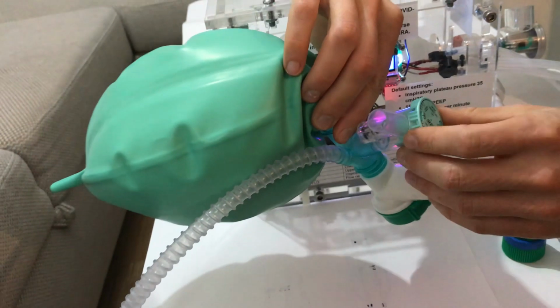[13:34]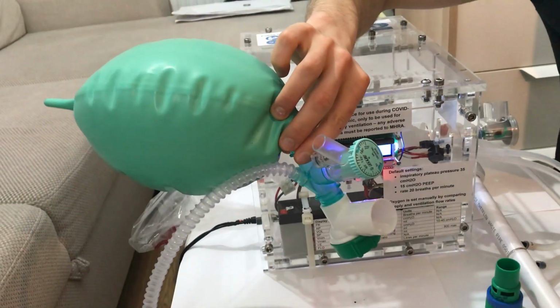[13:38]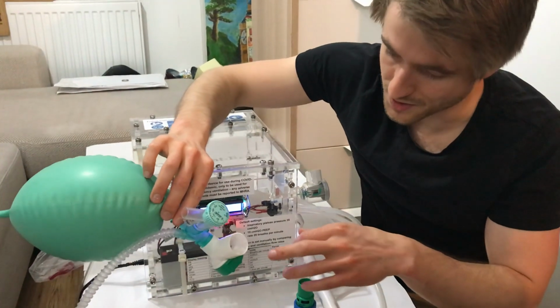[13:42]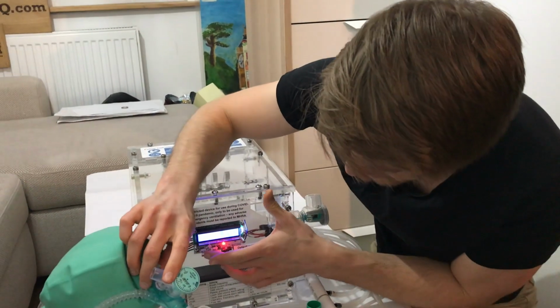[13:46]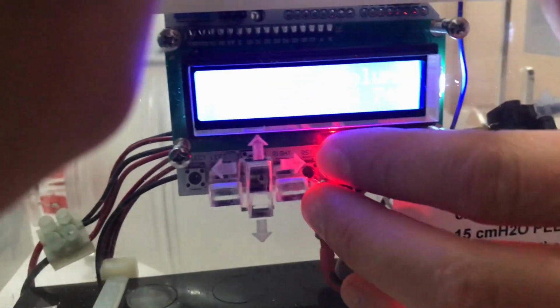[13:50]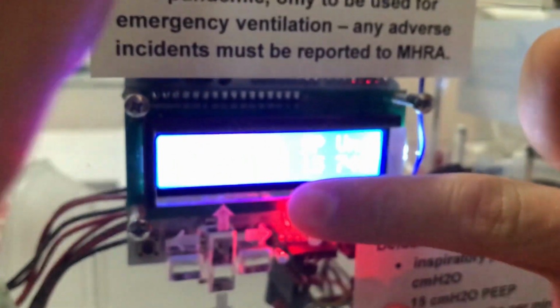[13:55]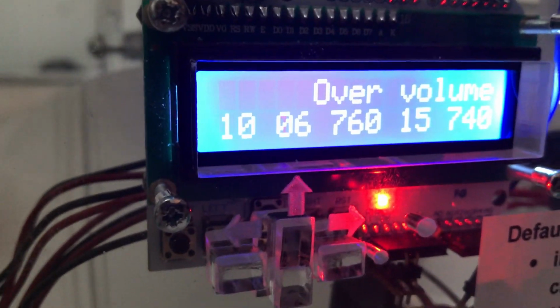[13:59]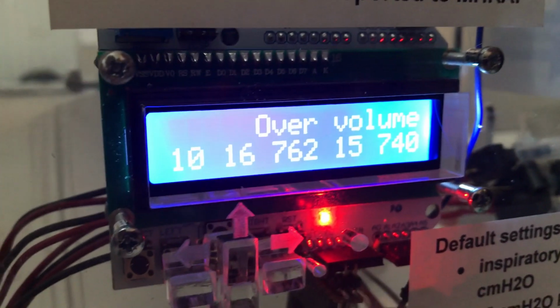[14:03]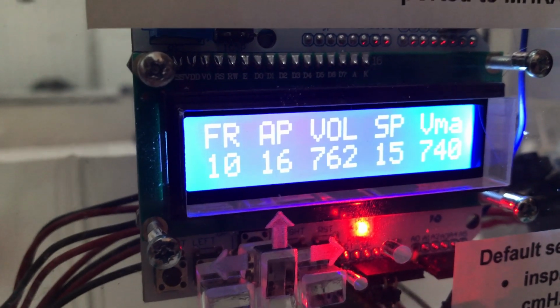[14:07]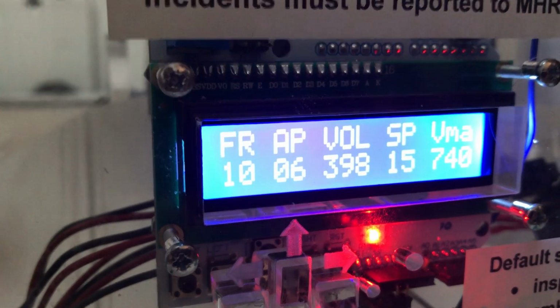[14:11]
So what I've been able to do with testing is test it in a few different lung conditions over here by simply changing that. So that means I'm letting some of the pressure escape as this test lung inflates, and that emulates the different resistances of different lungs. So as I change this, you'll probably see on the screen that the volume changes. So where we were at a volume of 400 before, we're at a volume of 600 now. So if I turn the restriction up again, then the volume should go back down roughly to where it was, which is about 400 millilitres.
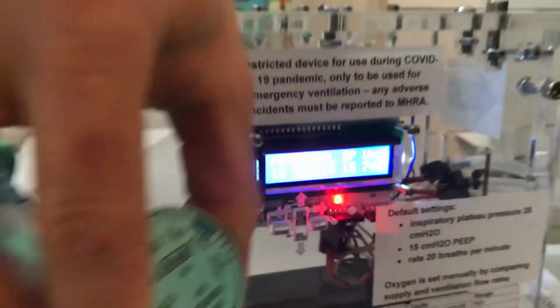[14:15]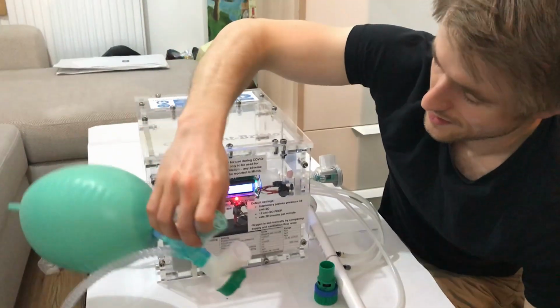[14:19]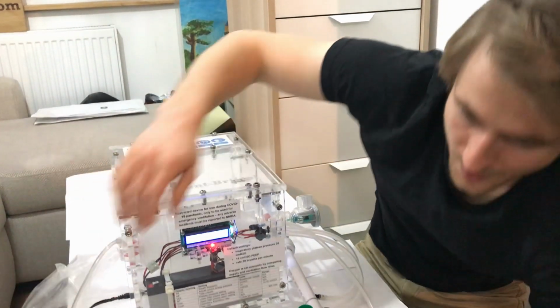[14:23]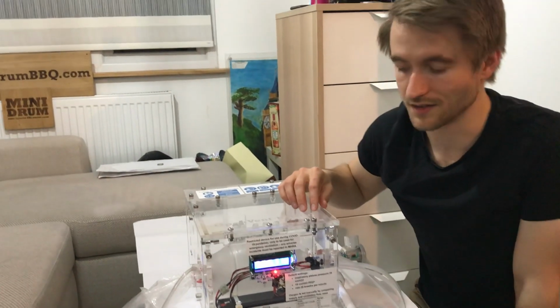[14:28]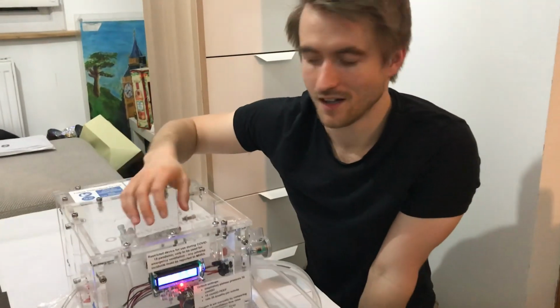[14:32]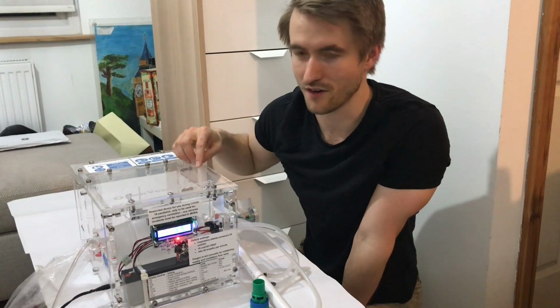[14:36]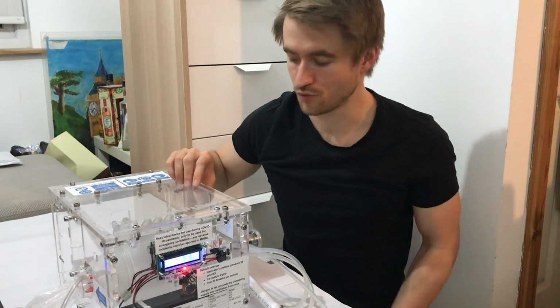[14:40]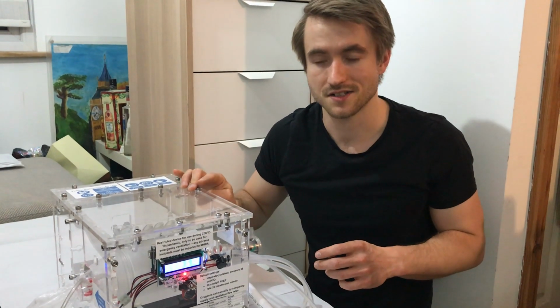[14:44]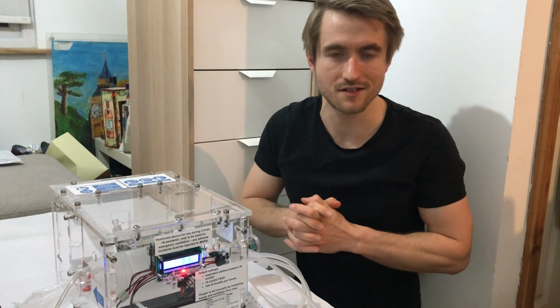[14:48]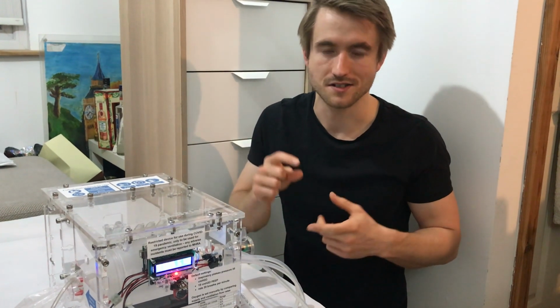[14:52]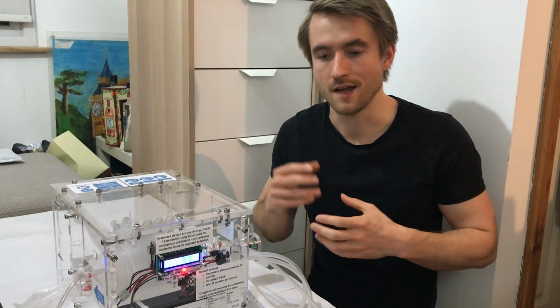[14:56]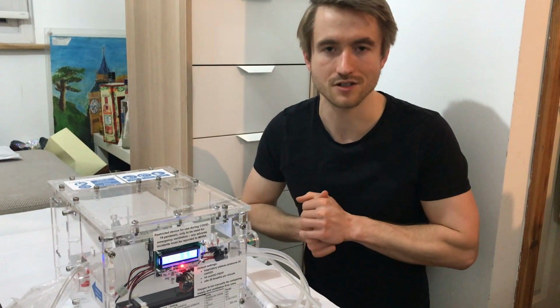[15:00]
So what we've been able to do with the limited equipment we've got is try and tune it to work with different settings of this. And then since that happened, we were able to go to the National Physical Laboratory in London to do some testing with this using their test lung, which is much more sophisticated than the thing I've got on the floor there by far. And what that's capable of is recreating all of the lung conditions that we need to test against all of the elements in the MHRA test plan document. So that means that test lung, you can set a compliance and a resistance of the lung to try and emulate different compliance and resistances of people suffering with the virus, really.
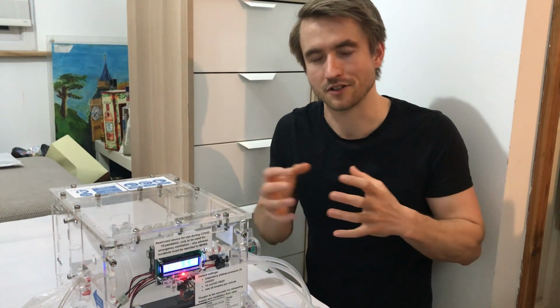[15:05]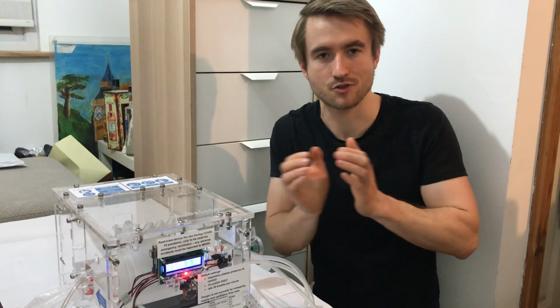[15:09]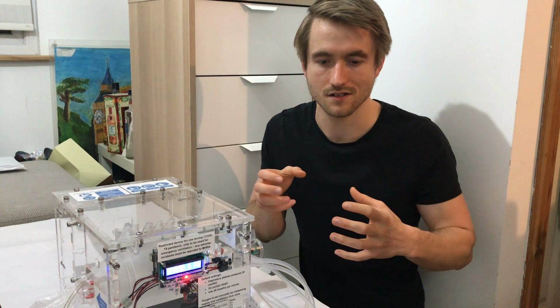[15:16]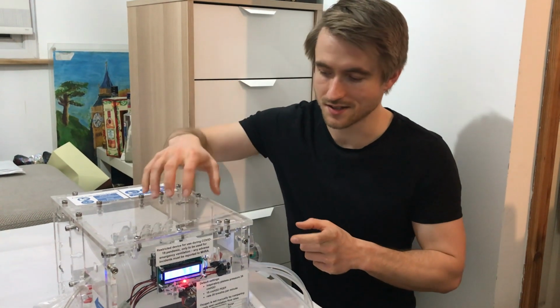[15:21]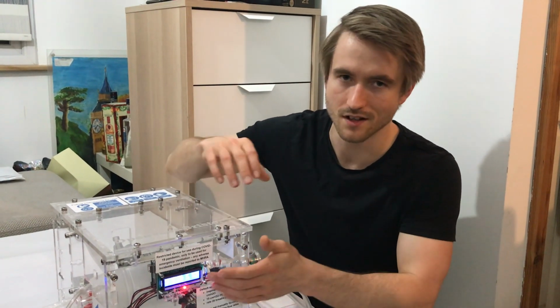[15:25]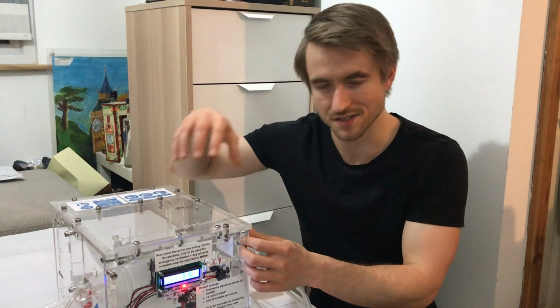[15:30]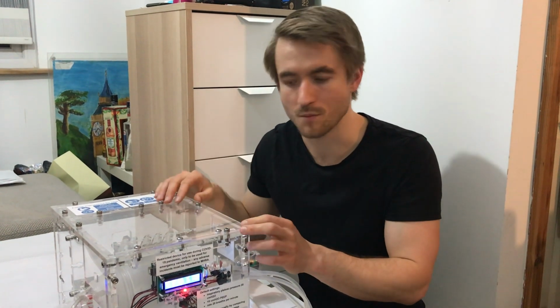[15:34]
So the compliance means how easily the lung can expand and contract, and how much it's allowed to expand and contract by. Then the resistance is how difficult it is to inflate. So they change those two settings and then test this ventilator under those settings, setting it to the appropriate pressure level and frequency, and then measure the output of this to see whether the output meets with the requirements from the MHRA.
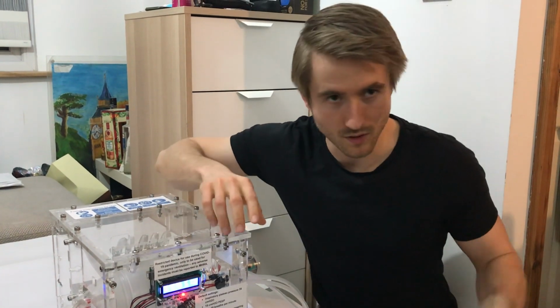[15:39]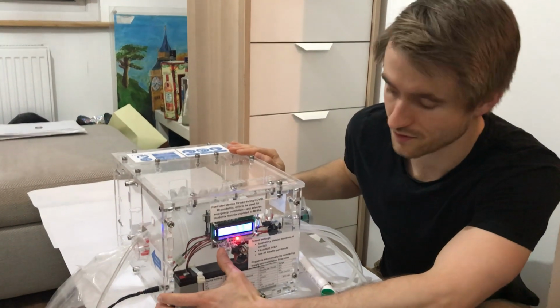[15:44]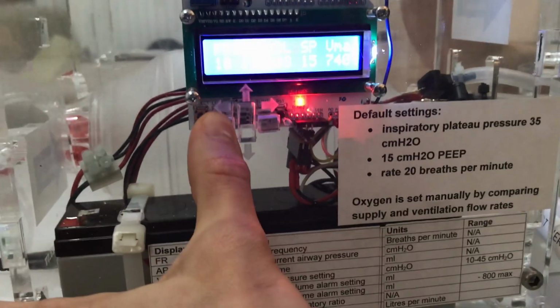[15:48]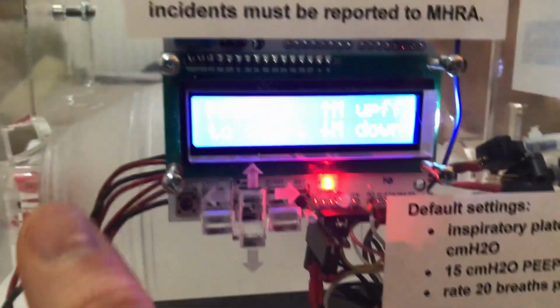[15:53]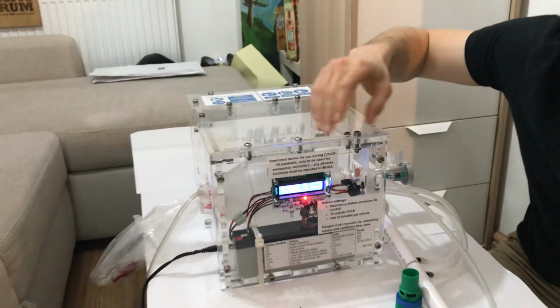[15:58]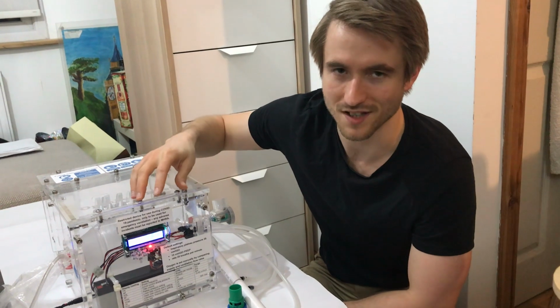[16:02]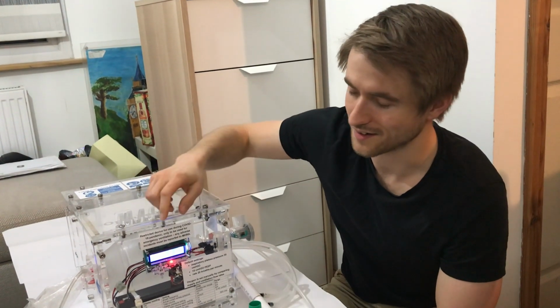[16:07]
I'm just about to show you a graph from that, but before doing that, I'm just going to show you how to switch it off. So you just press and hold the left hand button, and once you hear four beeps, then it switches off and goes back into the off state again. So it's quite important that it's a bit more difficult to turn it off than it is to turn it on. So you can hear those four beeps, and that's the machine saying, do you really want to do this? And it gives you a bit of warning before it actually happens.
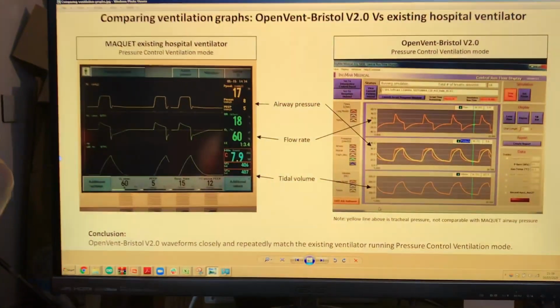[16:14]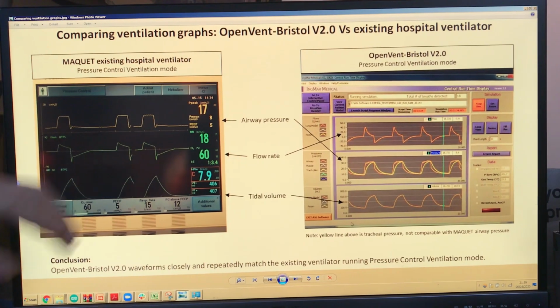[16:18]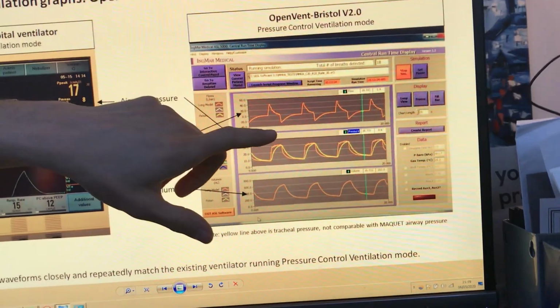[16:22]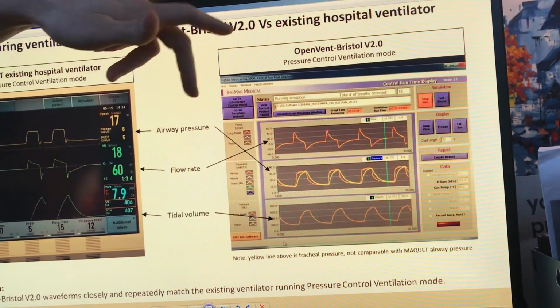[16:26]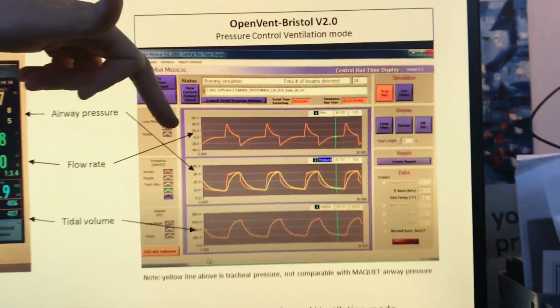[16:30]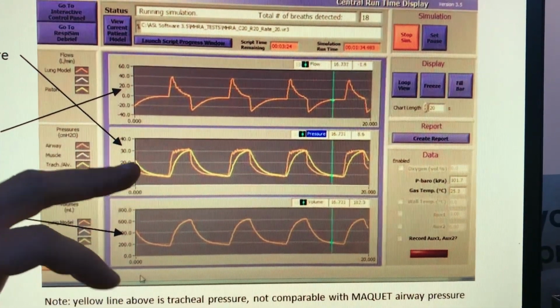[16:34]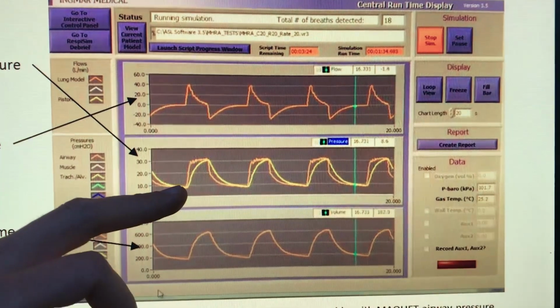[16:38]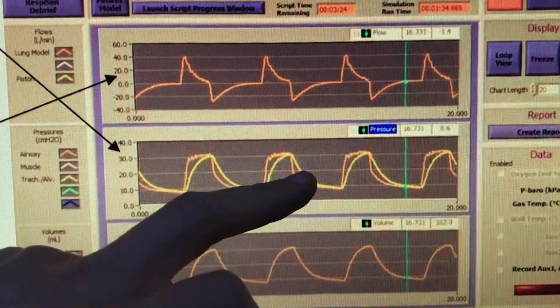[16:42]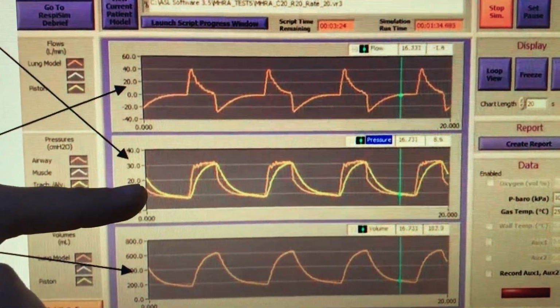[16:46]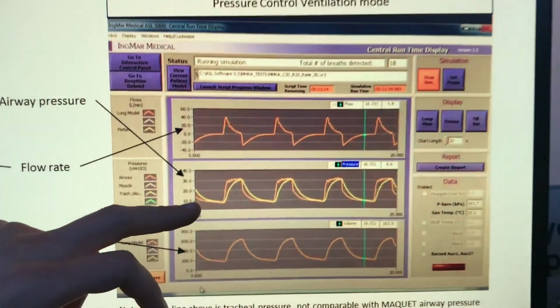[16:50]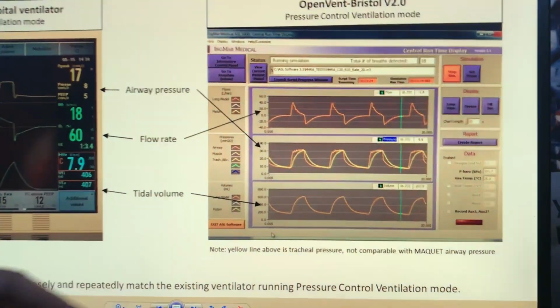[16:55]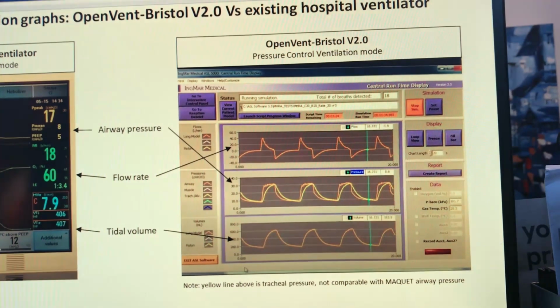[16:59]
So on the screen over here, these are the results from the last testing that we did a couple of days ago. On the right hand side, these are the graphs from the test lung, which were measured from our ventilator, and this shows the flow rate, this is airway pressure, and this is tidal volume. We're mainly concerned with the orange line on the pressure, the line which does this square wave shape. The reason we're interested in that one is because that's the one that's described in the requirements document. The yellow line is the pressure that's measured within the lungs, which can't really be measured in reality, so that's not mentioned in the requirements document.
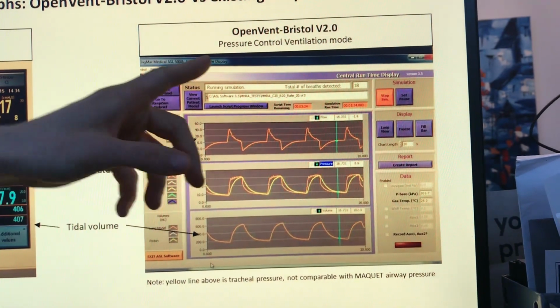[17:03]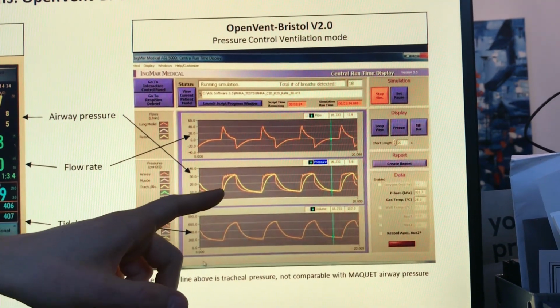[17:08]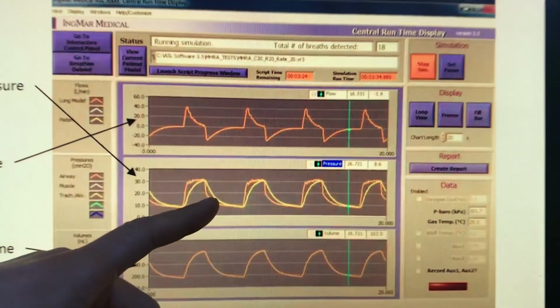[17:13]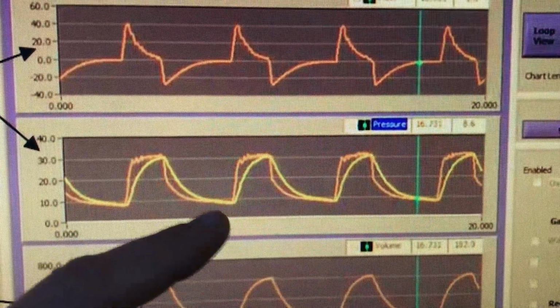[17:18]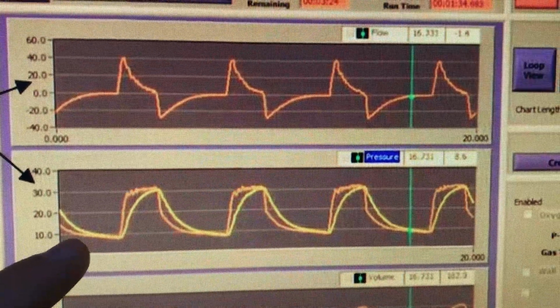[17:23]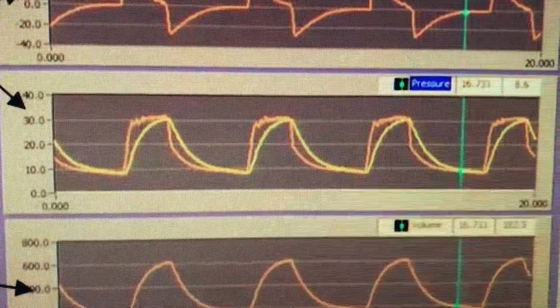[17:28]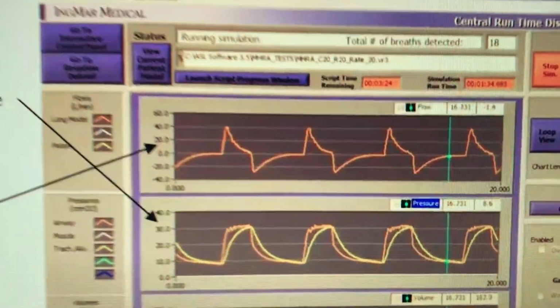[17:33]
So take note of, I guess, one, that we're in pressure control ventilation mode, and two, that the airway pressure has this square wave shape, up in the inhale, down in the exhale. The idea is that it doesn't go all the way back down to zero again, because we've got a PEEP valve, so the pressure always stays at a certain level depending on what you set it to on the adjustable PEEP valve. On the flow rate, we've got this kind of staggered shape, and on the tidal volume, we've got this kind of shark fin or sawtooth shape, whatever you want to call it.
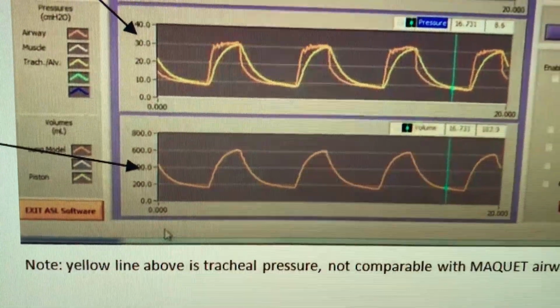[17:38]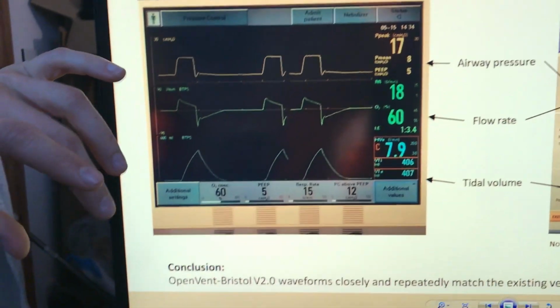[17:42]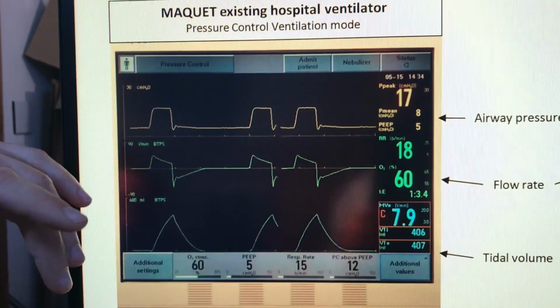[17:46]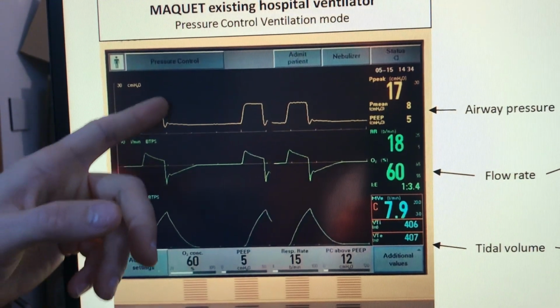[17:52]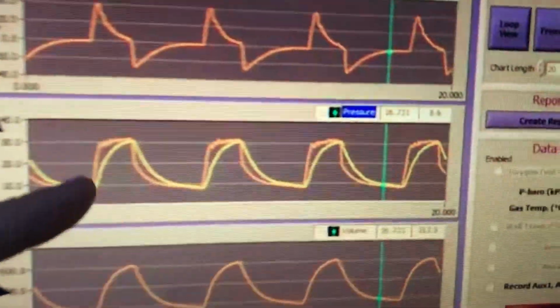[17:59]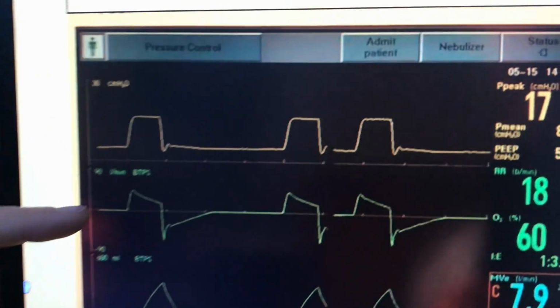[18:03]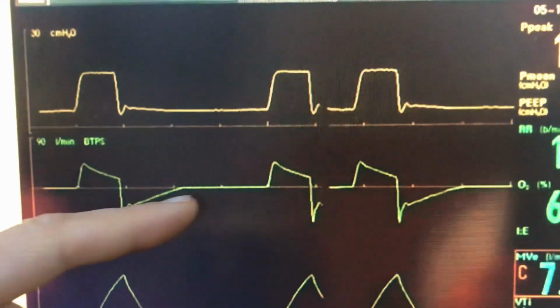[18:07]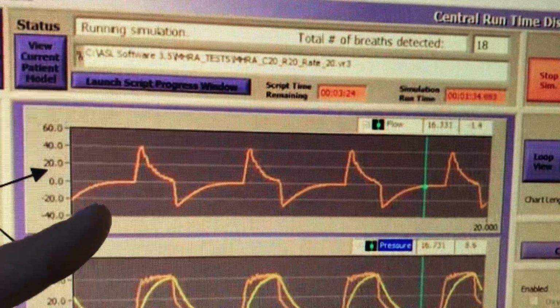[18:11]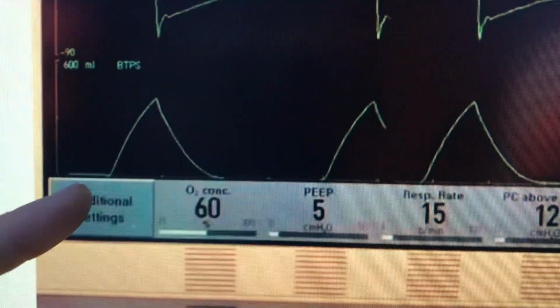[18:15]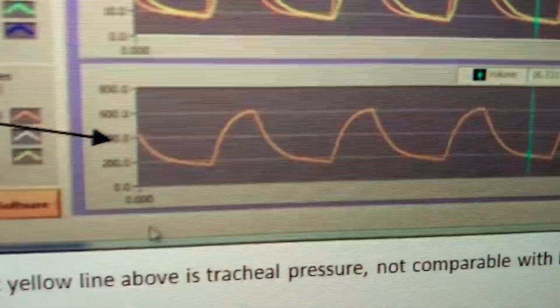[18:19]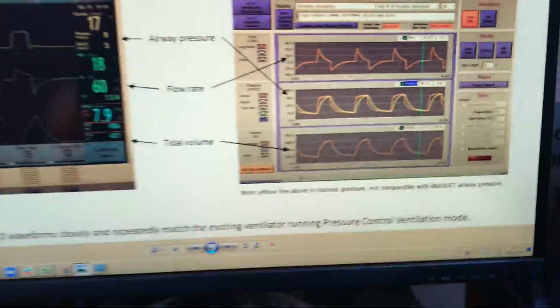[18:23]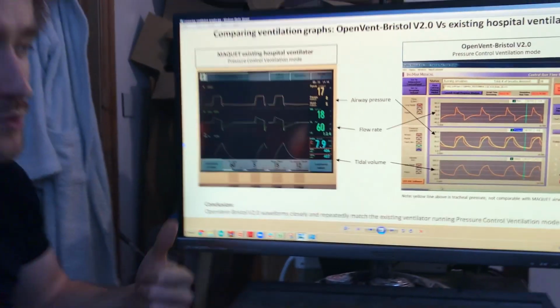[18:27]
And then over here on the left-hand side, I've just taken a screenshot from an existing, more sophisticated ventilator, which is already in use in hospitals, to give some perspective as a benchmark. Comparing the airway pressure, we've got the square wave shape, similar to our graph over here, which is the orange line. On the flow rates, we've got this kind of up, slope down, and then big dip downwards, which is not too dissimilar to what we've got over here. And again, on the tidal volume graph, we've got the sawtooth shark fin shape, a bit like we've got over here. So just doing that test gives us confidence that it's performing in a similar way to an existing ventilator, which is pretty great. That's amazing, actually.
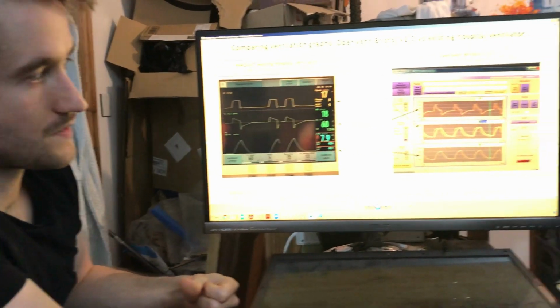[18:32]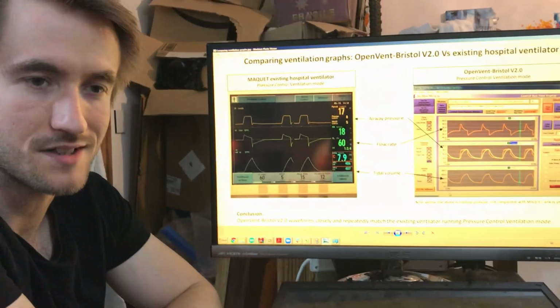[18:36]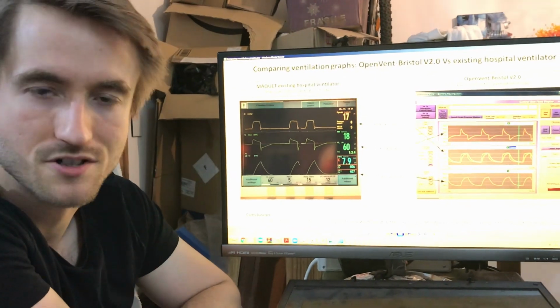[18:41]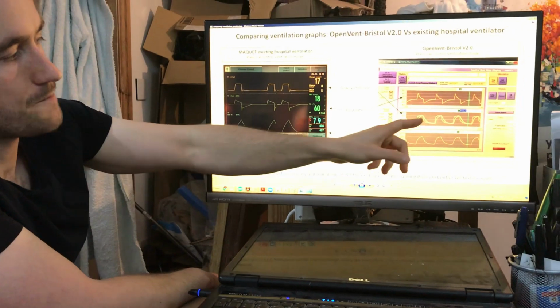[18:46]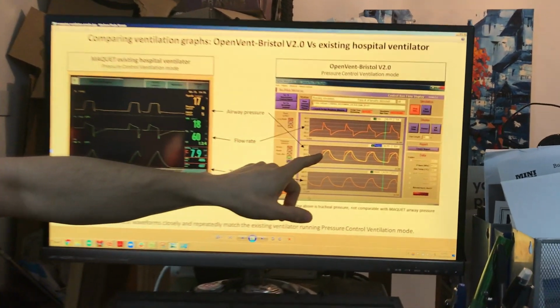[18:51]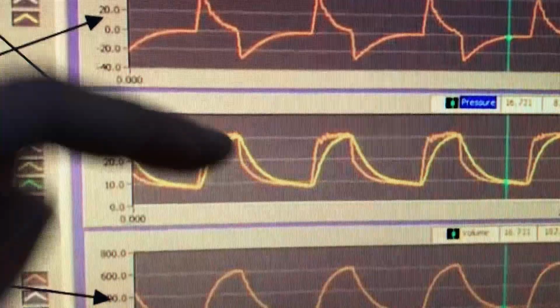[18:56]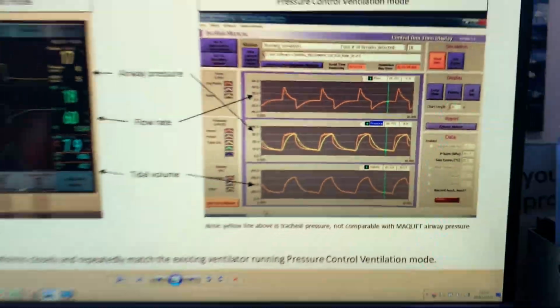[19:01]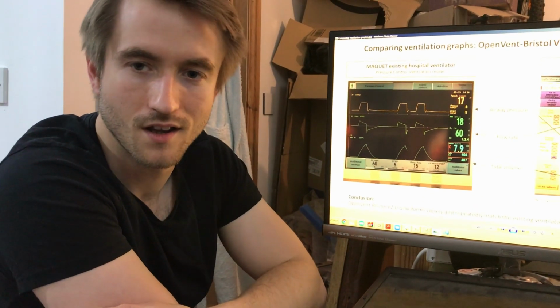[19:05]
What will come soon to give a bit more detail is the test report from MPL, which will come next week, which will tell us how close we are to actually meeting the requirements. But having a good idea at this time is possible too, by looking at what flow rate it manages to get to, what pressure it manages to get to, how it's able to maintain that, and whether that's within tolerance or not. And most of the time during the testing we had earlier in the week, it indicated that it was performing quite well.
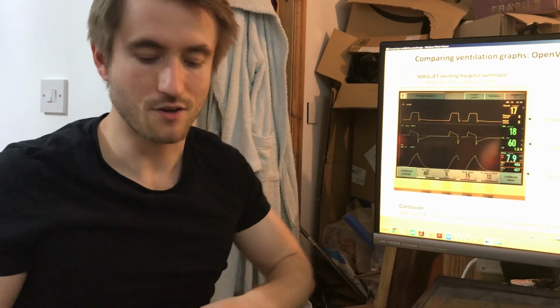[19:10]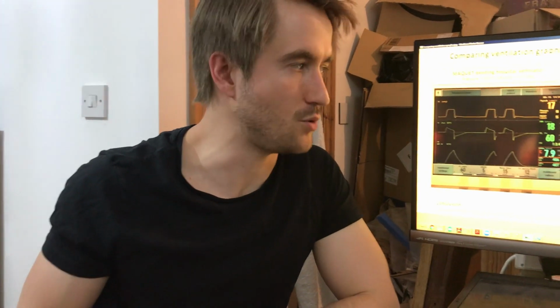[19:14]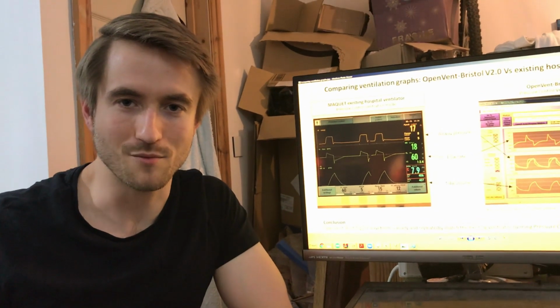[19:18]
So that's probably all the detail that I'll go into now, but I'll release a further video with a bit more detail on how the system works for people who want to get a bit more techie. But yeah, that's where we're at the moment.